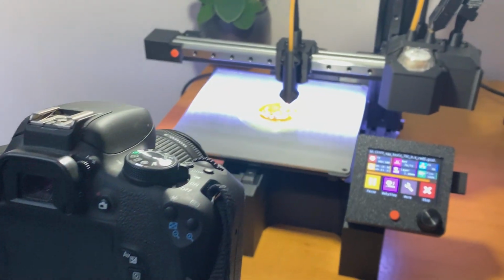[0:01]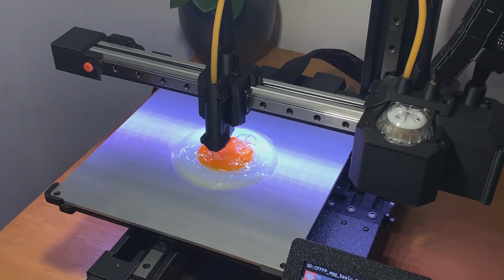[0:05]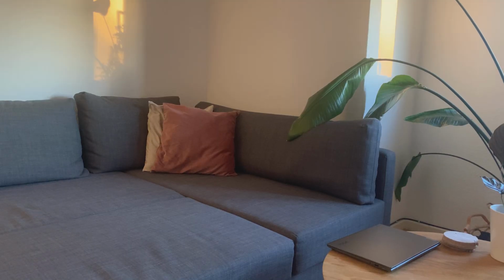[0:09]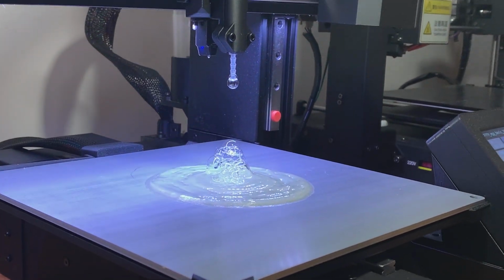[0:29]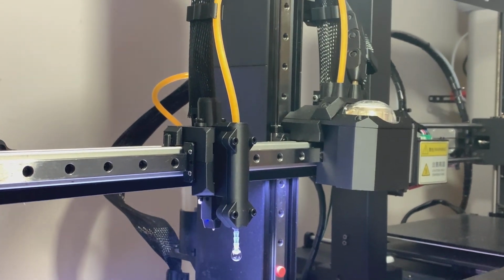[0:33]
About 3 months ago, I decided to build a custom bioprinter. Now, back at the time, I didn't really know how to build a 3D printer at all, so I watched a couple of tutorials online and it seemed doable. So I just went with it, ordered a lot of things online and built this custom 3D printer that you can go check out the specifications of in my previous video.
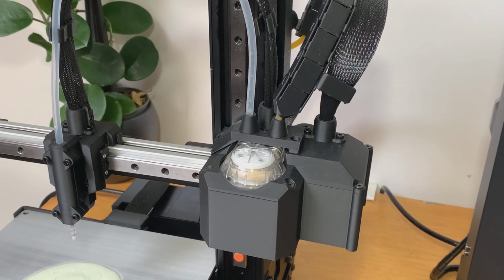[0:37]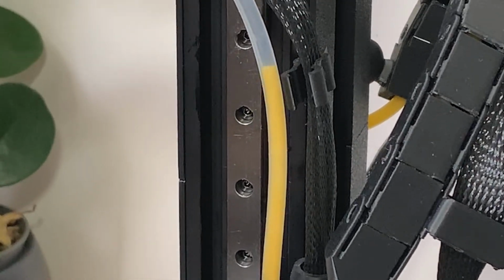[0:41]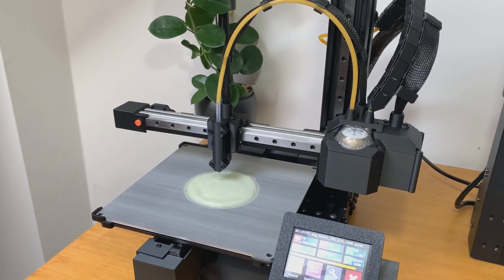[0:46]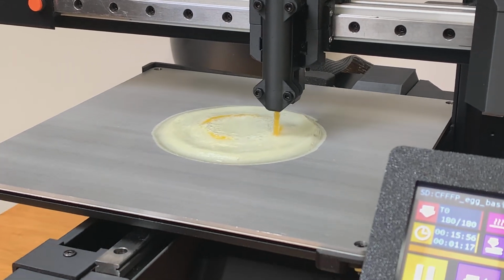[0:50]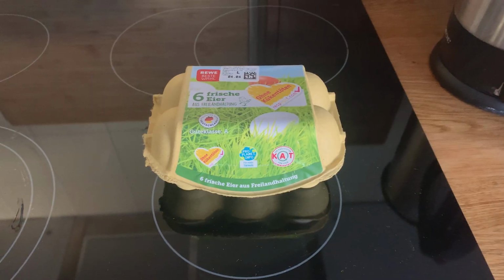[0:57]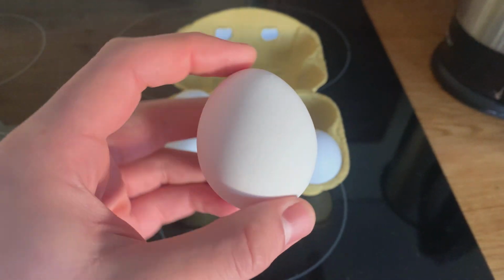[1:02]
Now, the first question was, what kind of system should it be? I decided to go with an extrusion-based 3D system, which uses a peristaltic pump to provide the biomaterial. Now the second question was, what kind of biomaterial should I use for the first print? And an egg was actually an obvious choice because it's quite available, even though they're a bit pricey right now. And also because the egg can actually harden or coagulate around 70 degrees and the print bed can reach well above 70 degrees.
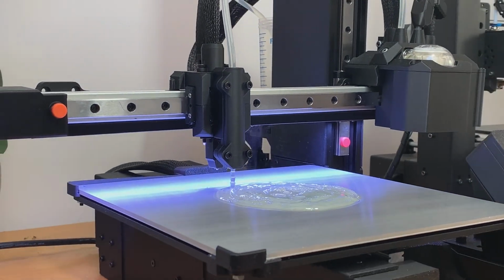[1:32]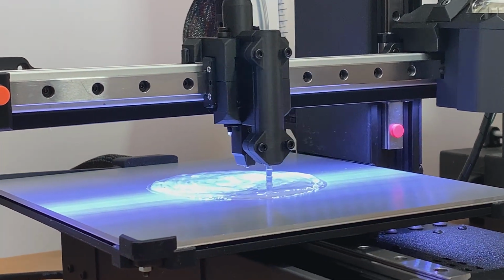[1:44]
So this was perfect. Of course, in the future, I have in mind also other materials, but right now I will leave you with the video of how this 3D printer can print a fried egg using an actual egg. I know it sounds a bit silly, but it works. Now, before I show you the full time lapse of 3D printing a fried egg from start to finish, I want to explain the steps that made it all work seamlessly. Because trust me, there was a lot of trial and error before I finally got everything synchronized.
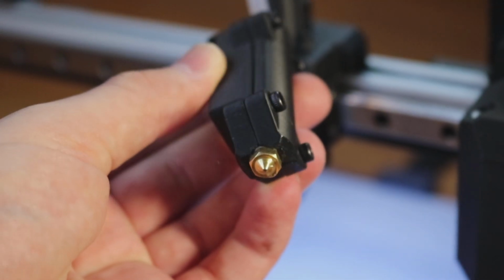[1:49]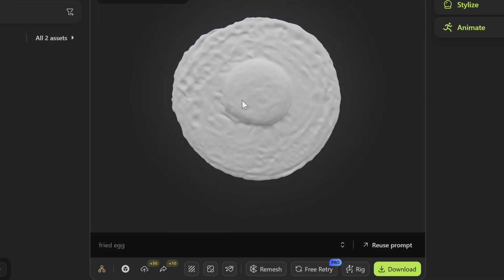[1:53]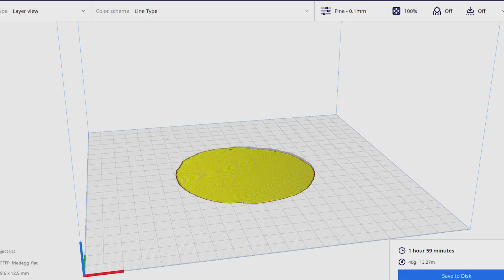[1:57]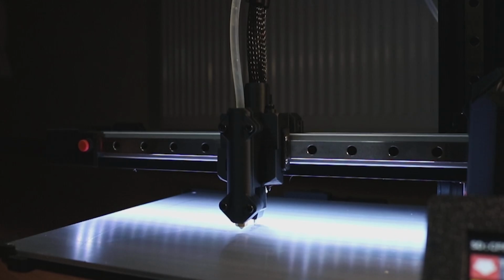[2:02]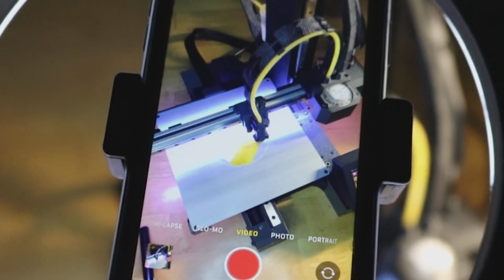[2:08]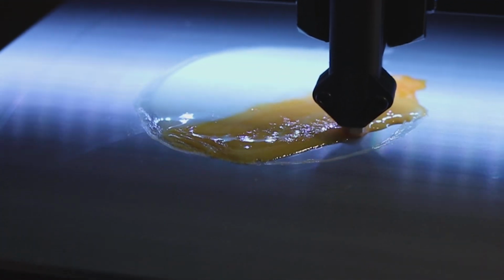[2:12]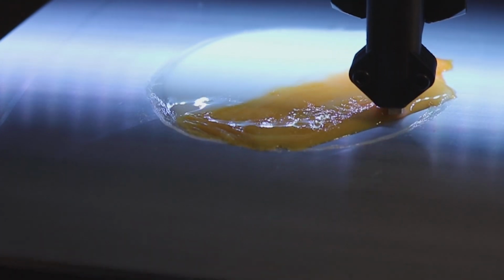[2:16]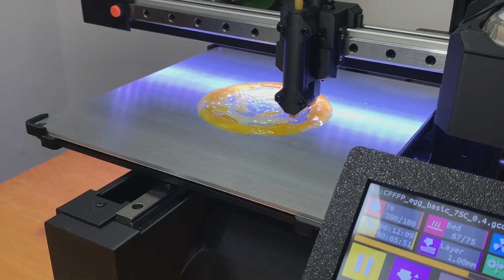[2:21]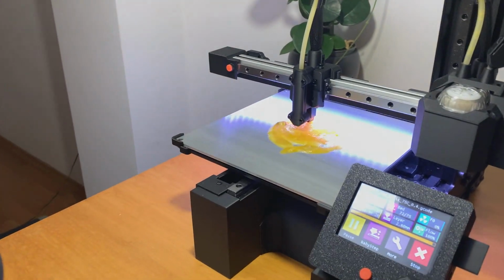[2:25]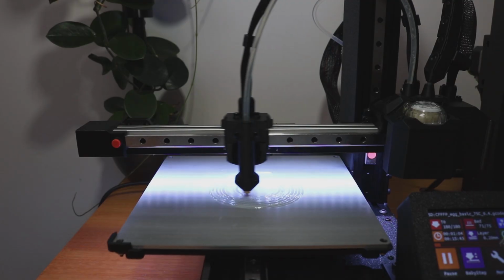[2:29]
My first iteration started with a pretty standard setup. A 0.4mm nozzle, a layer by layer printing approach at 0.2mm height, and a realistic egg model created with Machia AI. The idea was simple, mix the whole egg in a single tube and extrude it gradually to build a fried egg. But in reality, well, let's just say that almost every decision at this stage turned out to be the wrong one. The 0.4mm nozzle seemed viable at first, and with a lot of tweaking I still believe it's possible, but because of the viscosity of the egg whites and egg yolk, it kept clogging constantly. This caused pressure buildup inside the tubing from the peristaltic pump, and at one point the pressure got so high that the nozzle literally blew off the tubing.
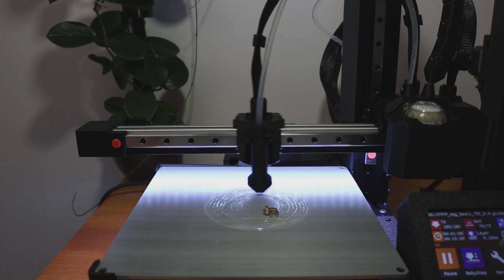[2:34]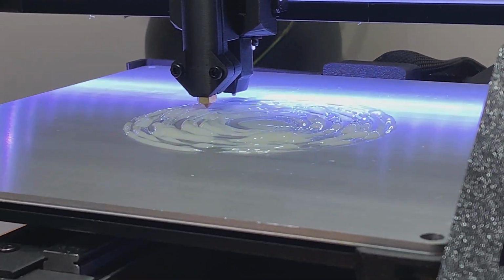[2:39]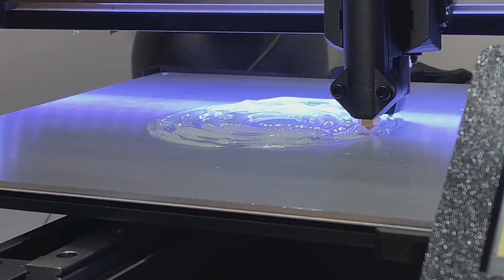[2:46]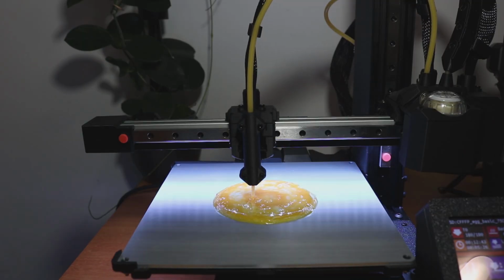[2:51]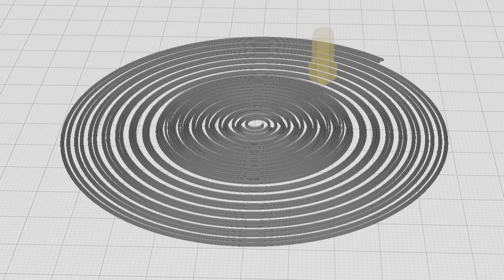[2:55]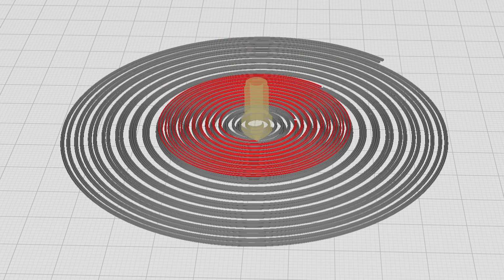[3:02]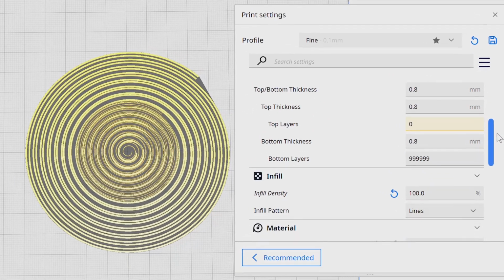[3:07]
Even after tweaking the layer height settings and E-steps, the prints kept failing. The biggest issue was inconsistent flow of the egg material. And because the delivery wasn't steady, I couldn't set up reliable print properties, especially for this realistic egg model. There was just no way to predict or control how the egg material would behave. So I had to rethink everything. Instead of trying to print a highly detailed layered egg, I switched to a simplified model using white spirals for the egg whites and smaller elevated spirals for the yolk.
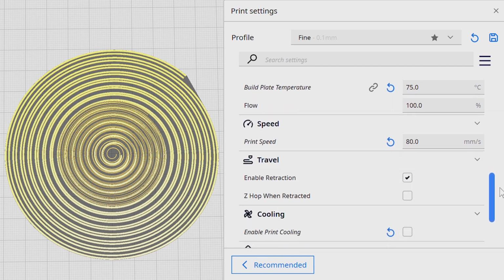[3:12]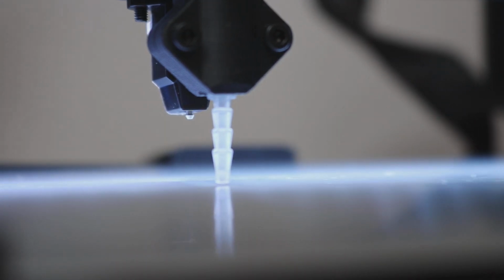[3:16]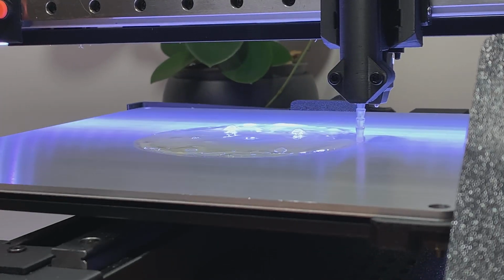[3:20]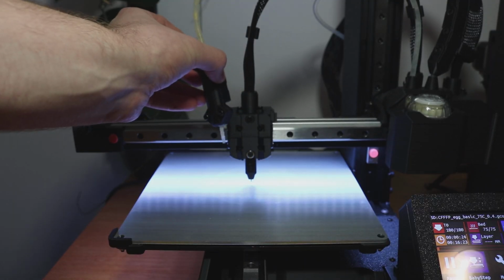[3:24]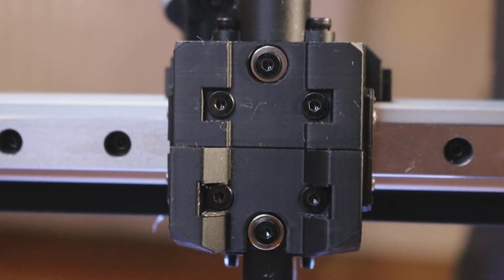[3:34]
To fix the clogging issue, I swapped out the 0.4mm nozzle for a 1mm polyethylene nozzle. This helped reduce the pressure buildup and ensured a more consistent flow. But that change almost cost me a microprobe. On the first attempt, I didn't set the correct offset and, well, this happened. Oh. The print head snapped and I had to reprint some of the parts, but luckily nothing was seriously damaged.
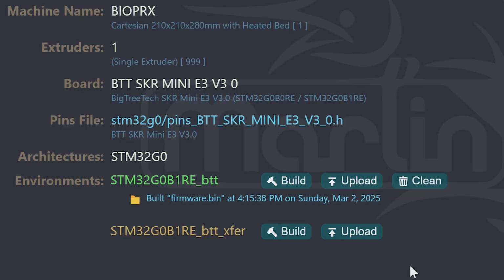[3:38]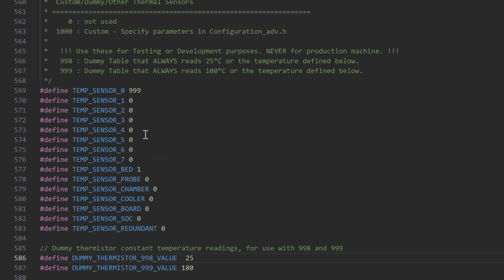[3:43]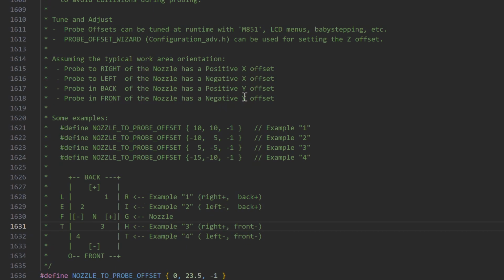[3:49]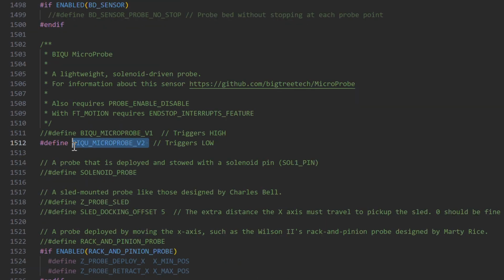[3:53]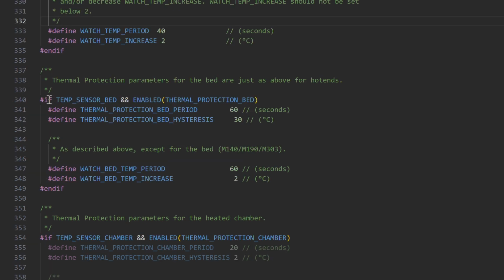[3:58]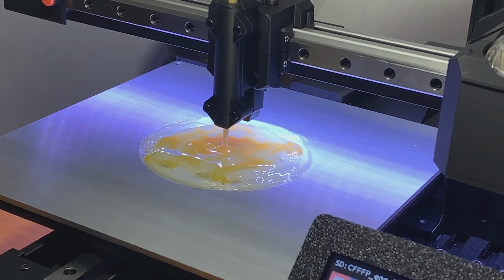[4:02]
Aside from the hardware changes, I had to adapt the firmware as well. I flashed the printer firmware multiple times and modified it in VS Code to set a dummy extruder temperature since I'm not using plastic filament, configure the microprobe to avoid crashes, turn off print bed temperature drop protection so that the printer wouldn't halt mid-process, and adjust various motion and extrusion parameters for better control over fluid movement.
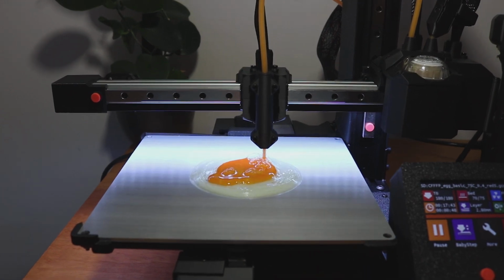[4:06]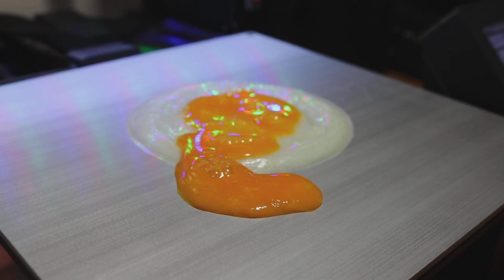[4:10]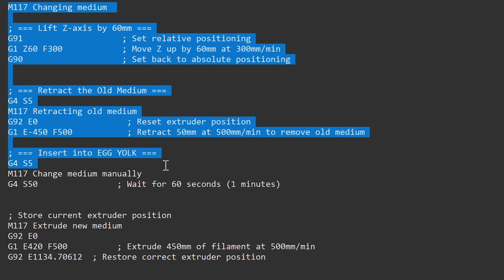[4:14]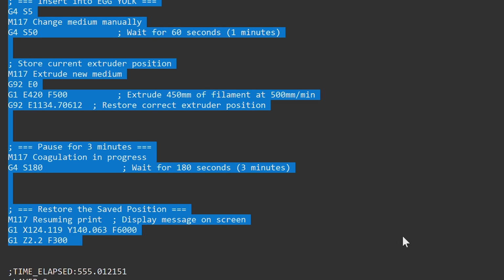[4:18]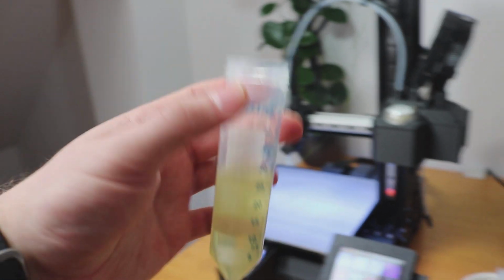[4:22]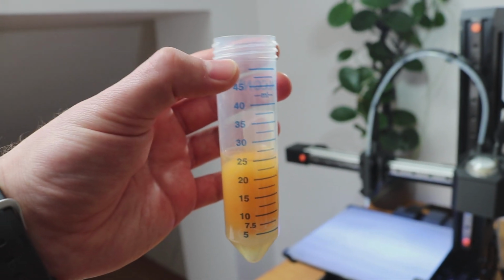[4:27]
But the firmware alone wasn't enough. The G-code itself needed some modifications. Instead of printing the entire egg in one go, I modified the sequence so that the egg whites are extruded first from one tube. A 3-minute delay is then introduced to allow them to partially coagulate and form a stable base, and then the egg yolk is printed separately from a different tube.
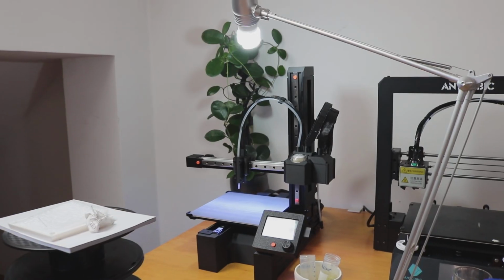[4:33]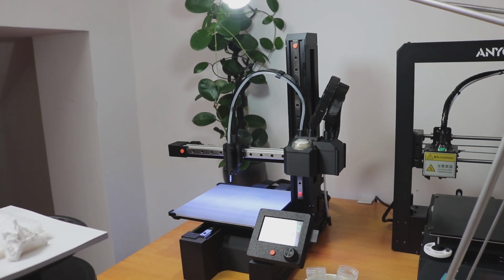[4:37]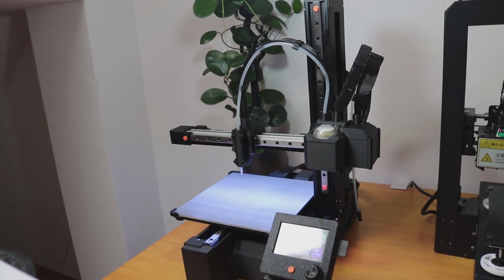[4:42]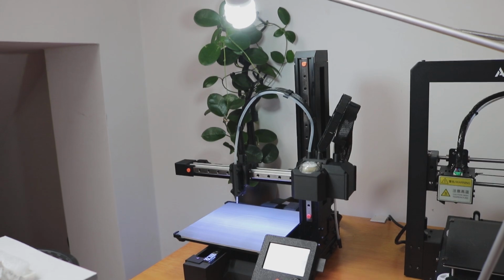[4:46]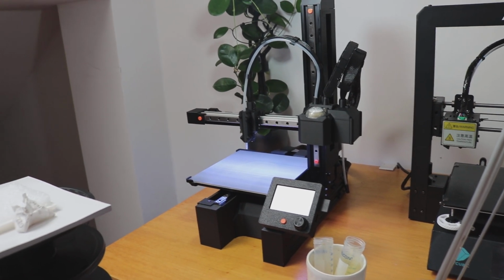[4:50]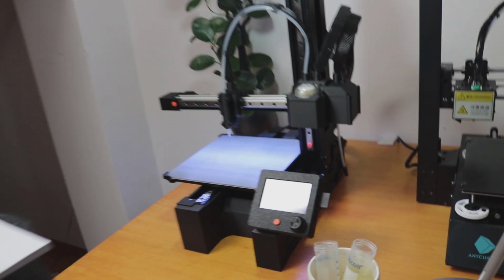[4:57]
And now I can finally show you the promised video of 3D printing a fried egg from start to finish. This time I can actually probably call this custom 3D printer a bioprinter because it will be using a biomaterial to make stuff. And afterwards we'll explore also other materials. So hopefully we'll get a nice looking fried egg this time. And let's just do it. So let's first load the egg whites.
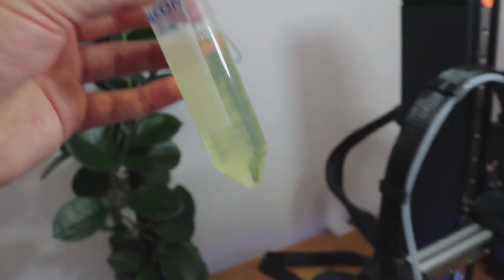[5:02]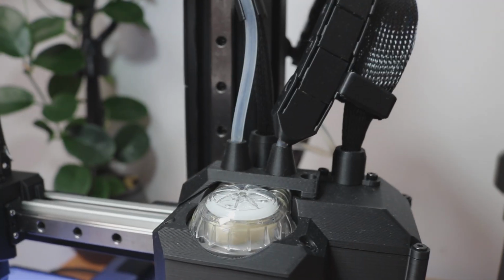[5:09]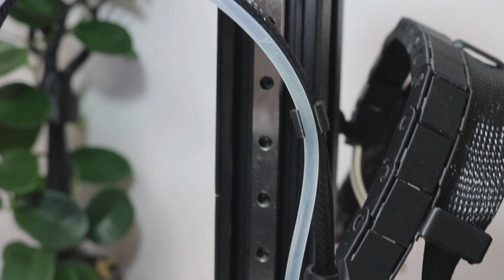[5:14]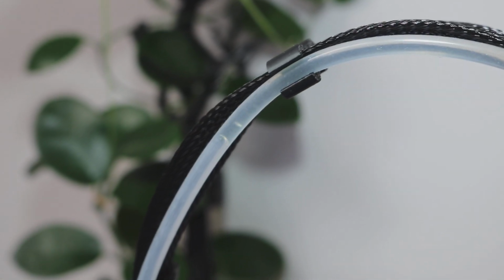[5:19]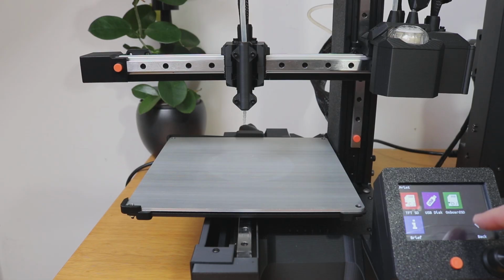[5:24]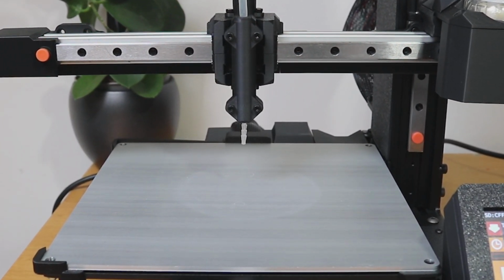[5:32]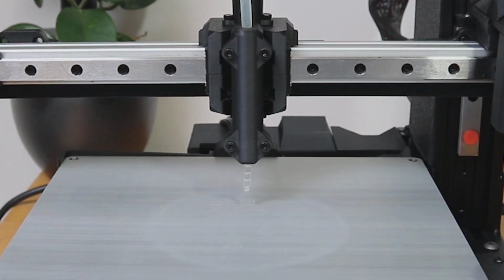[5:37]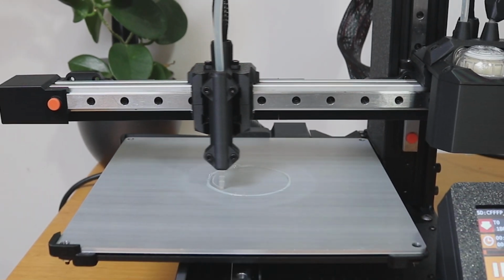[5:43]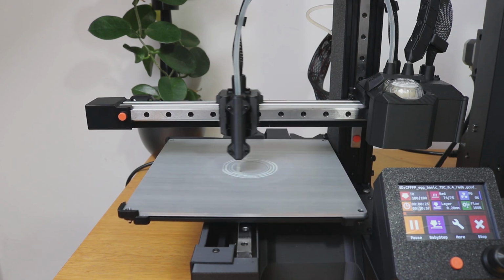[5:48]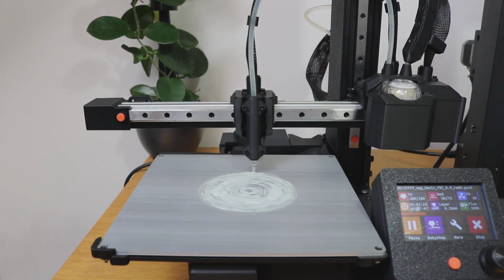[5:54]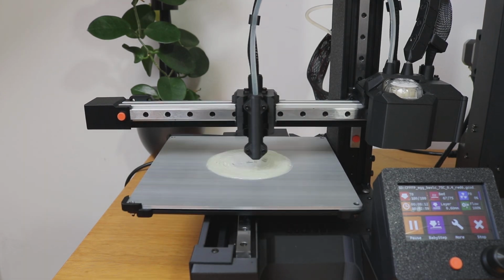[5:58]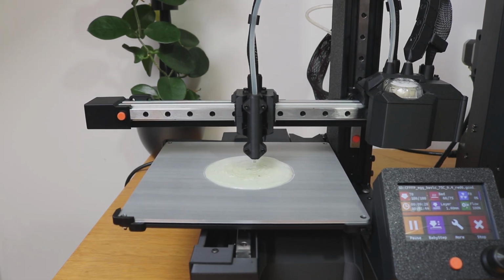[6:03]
First, the nozzle lowers and begins printing in a circular motion, extruding the first layer of egg whites. Even though the G-code doesn't explicitly encode the texture, the natural viscosity of the egg whites creates an uneven distribution, giving it a realistic texture. This process continues for about 4 minutes, forming a solid base. Once complete, the nozzle lifts and the remaining egg whites inside the tubing are unloaded.
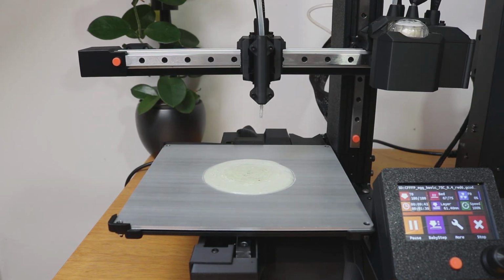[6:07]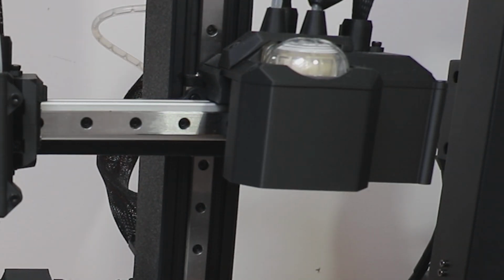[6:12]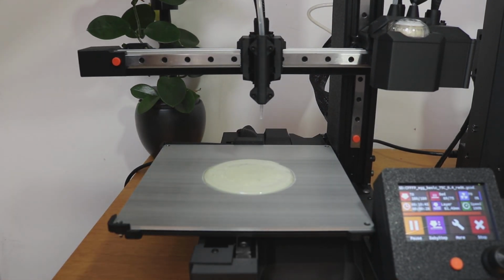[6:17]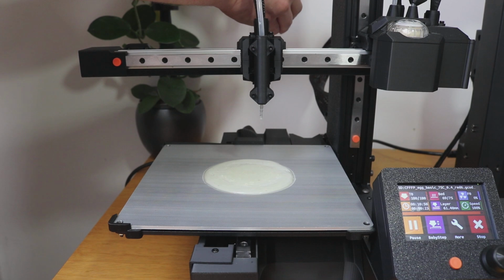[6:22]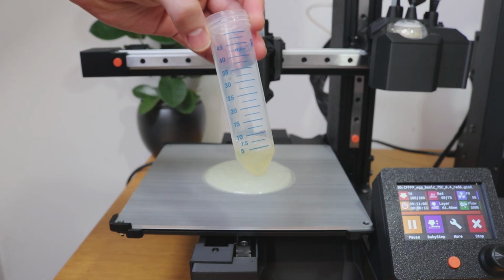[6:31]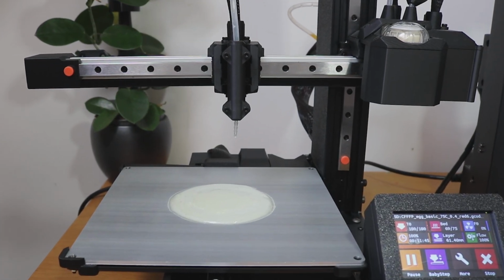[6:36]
This is followed by a 1 minute pause during which I swap the egg white tube for the egg yolk tube. After loading the egg yolk into the system, there is a 3 minute time delay allowing the egg whites to firm up. If you look closely, you can actually see steam rising under the LED lights, which is pretty cool. Initially, I considered homing the X and Y axis and extruding the leftover egg whites before switching to the yolk, but that seemed wasteful. Instead, I opted to just leave the nozzle and let it sit still until the transition between the egg whites and egg yolk is done.
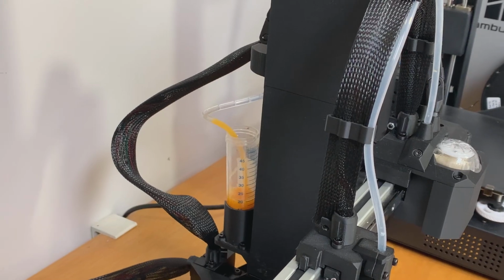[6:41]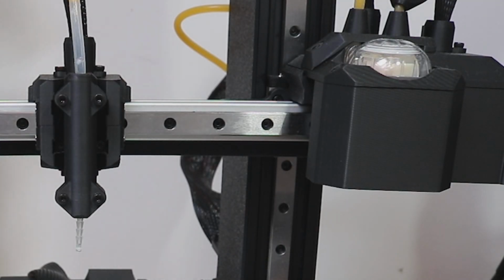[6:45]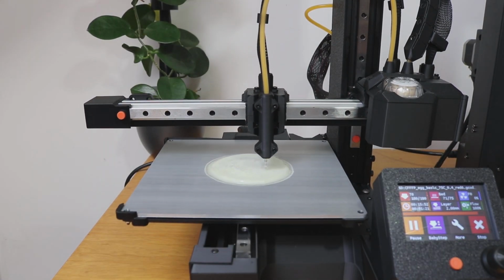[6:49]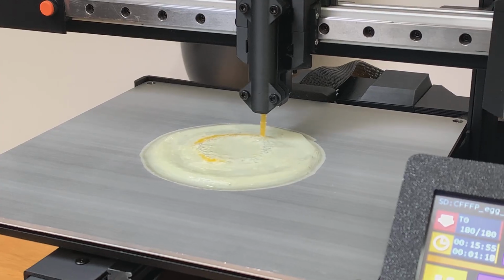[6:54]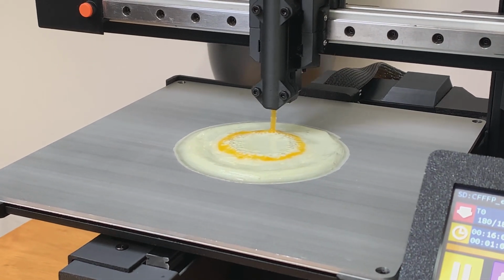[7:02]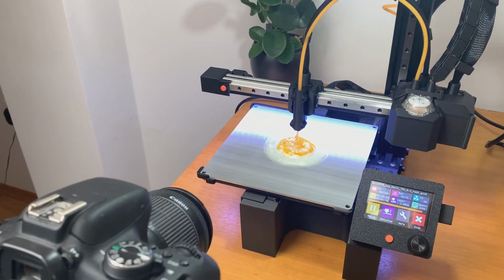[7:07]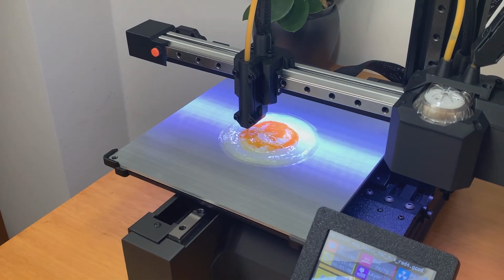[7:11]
Occasionally, this swap actually introduced some bubbles, but they didn't seem to affect the overall structure of the printed fried egg. Once the print resumes, the egg yolk is deposited on top of the egg whites and the result is unlike anything I've seen before. This is, to my knowledge, the first ever homemade bioprinter that successfully 3D prints a fried egg using a real egg material. I haven't seen anyone attempt this before and the process was an absolute challenge, but seeing it work makes all the effort totally worth it.
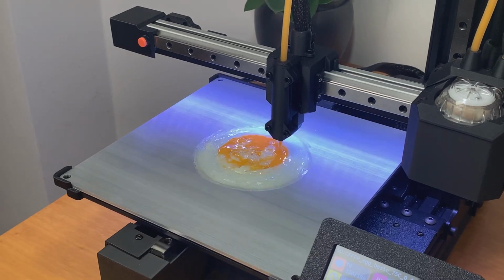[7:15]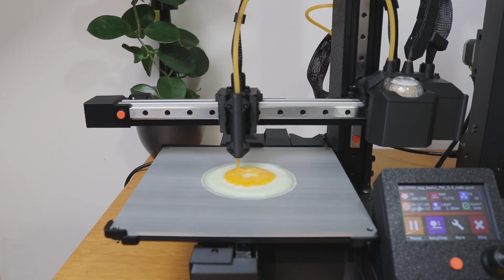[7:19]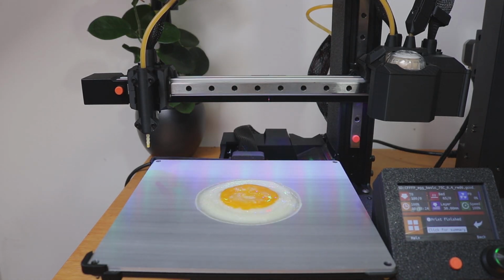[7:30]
Now moving forward, I plan to explore new biomaterials and push the limits of what this printer can achieve. I'm currently awaiting the shipment of a special material that I believe could open new possibilities for different applications. While I'm fully aware that the capabilities of this printer are somewhat limited, I'm excited to experiment and see what else can be done.